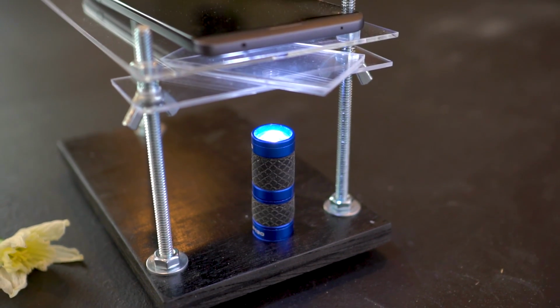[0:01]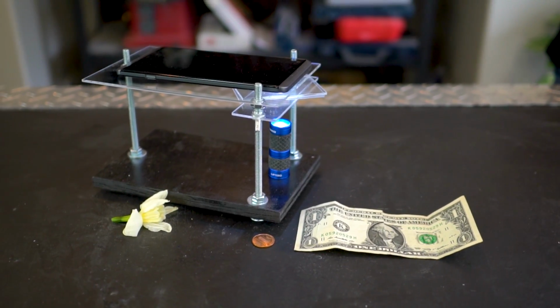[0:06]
In this video, we're going to show you how to take a scrap of wood, a sheet of plastic, and a little bit of hardware to make a microscope that works with your cell phone.
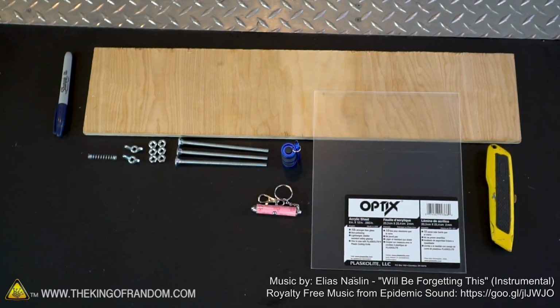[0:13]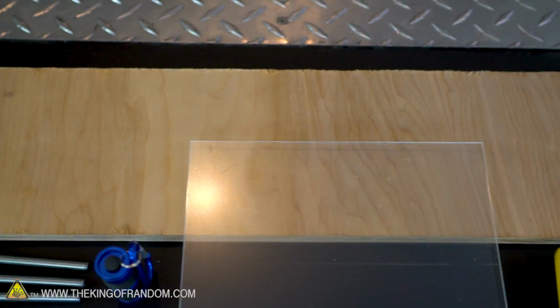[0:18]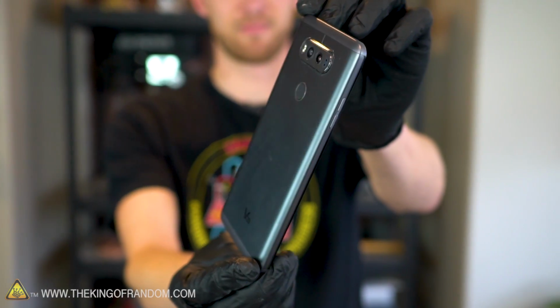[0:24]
The supplies for this project are simple and easy. We have a sheet of clear plastic, a scrap of wood board, a little bit of hardware, and a laser pointer and a flashlight. And of course, since that's how this microscope works, we're also going to need a cell phone with a camera.
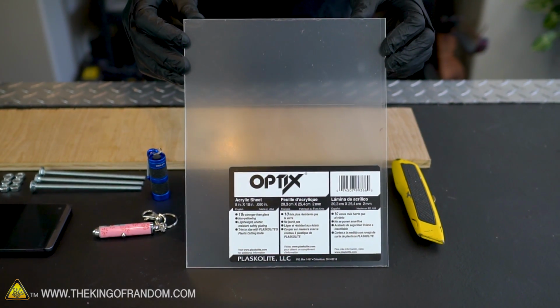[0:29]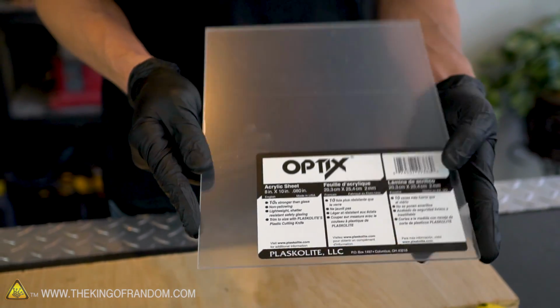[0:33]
First, grab your sheet of plastic. This one is an 8x10 sheet of acrylic from Lowe's that only cost a few bucks. These sheets of plastic usually come with protective layers on both sides. It's time to peel those off.
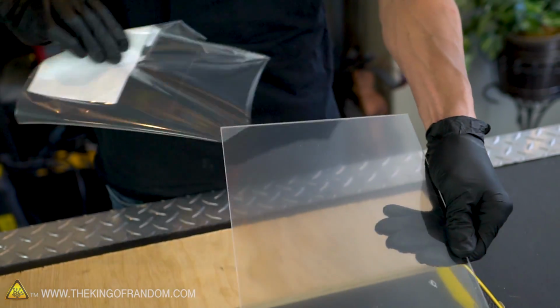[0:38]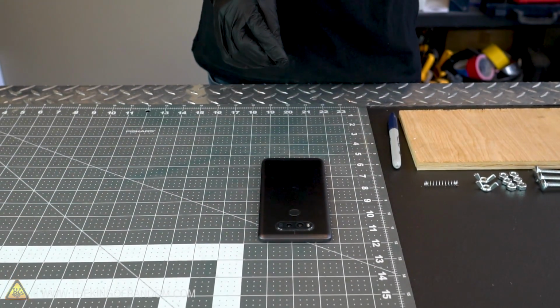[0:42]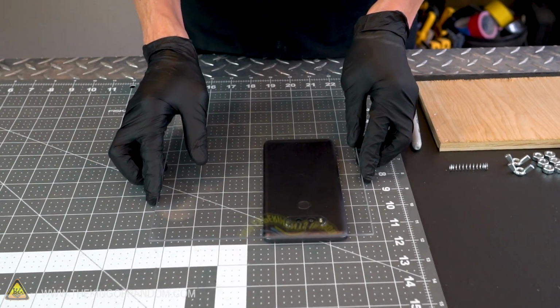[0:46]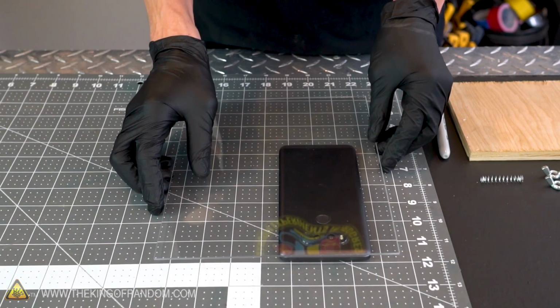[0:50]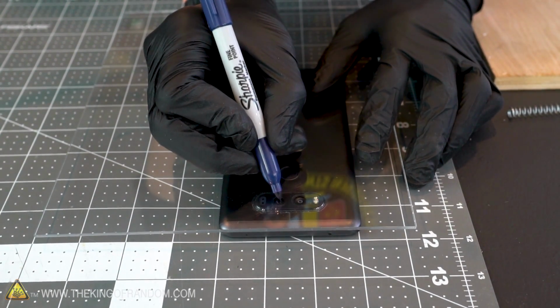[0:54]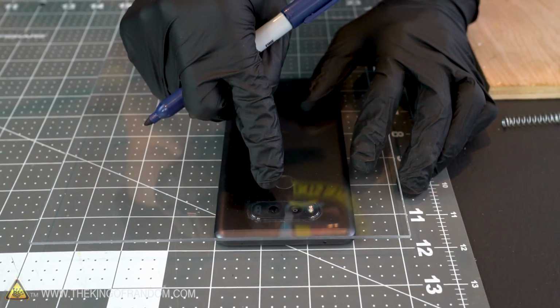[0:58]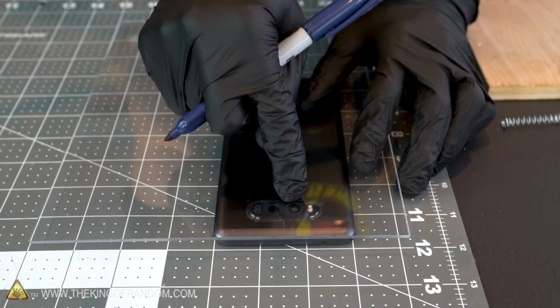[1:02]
Place your cell phone face down on a surface that won't scratch the screen. Then take your plastic sheet and line it up on top of the phone, leaving enough space on both sides so you'll be able to add support points. Using a marker that will draw on the plastic, mark a spot where your phone's camera is. This model of phone has two cameras on the back, so I'm making sure to mark the one that's used for narrower shots, not the wide-angle lens.
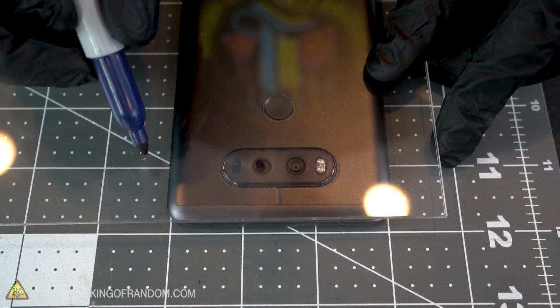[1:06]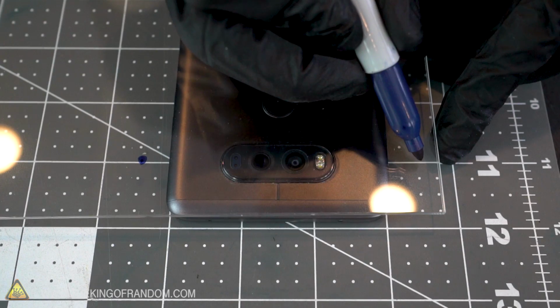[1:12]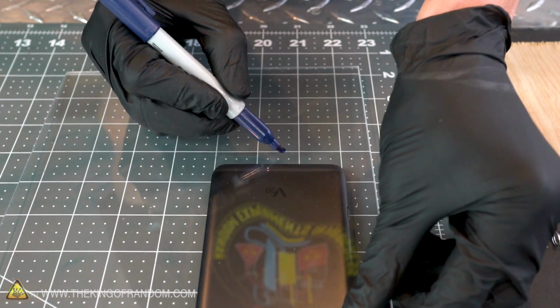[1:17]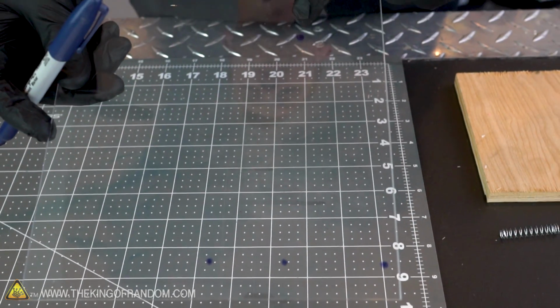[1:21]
In a line with where you've marked your camera, mark two spots on the sides where you can add your supports. You'll be drilling holes into the plastic about one quarter of an inch wide, so make sure you leave enough space. Add one more support point down near the bottom of the phone as well. You should now have four spots marked out in your plastic where you're going to drill holes.
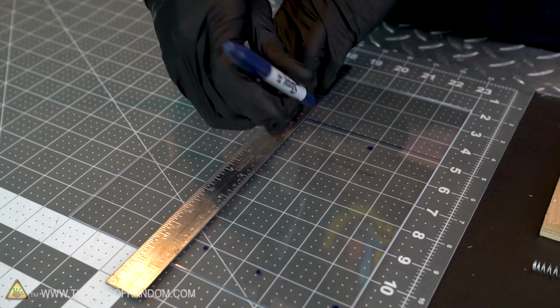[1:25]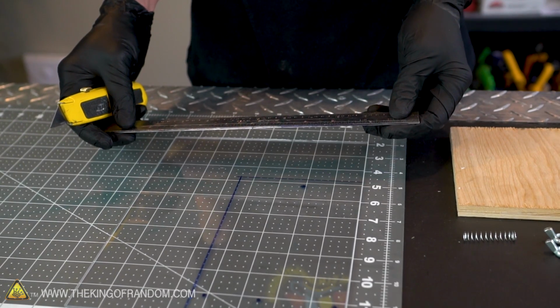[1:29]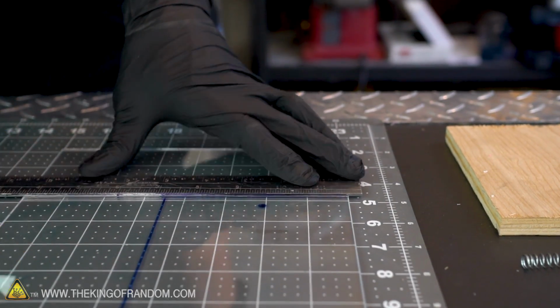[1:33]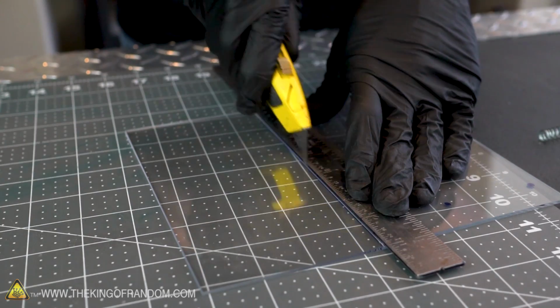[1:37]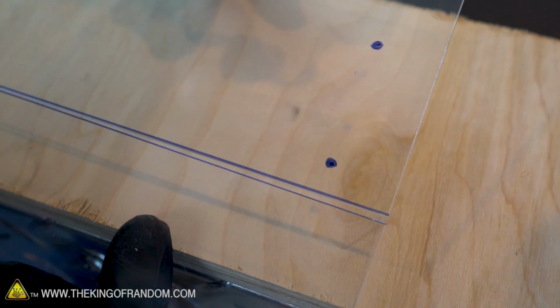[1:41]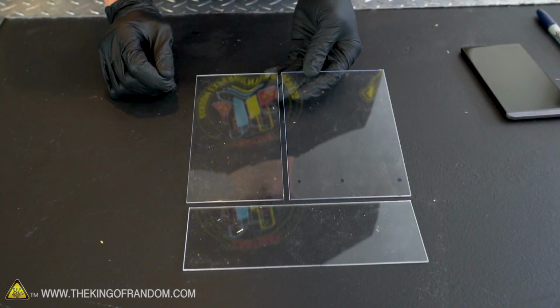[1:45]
But before you do any drilling, you need to cut out a rectangle that completely contains those points. There are several ways to cut acrylic. I find the easiest for a sheet this thickness is to score the plastic with a sharp knife and then bend it over a hard corner. Don't throw away those pieces that you broke off because we are going to use them later.
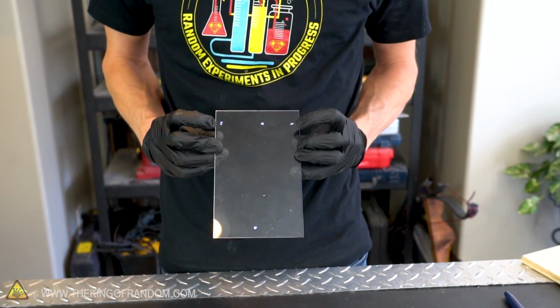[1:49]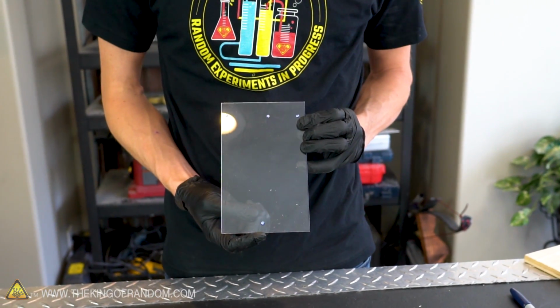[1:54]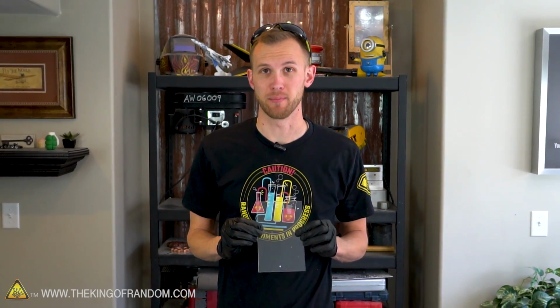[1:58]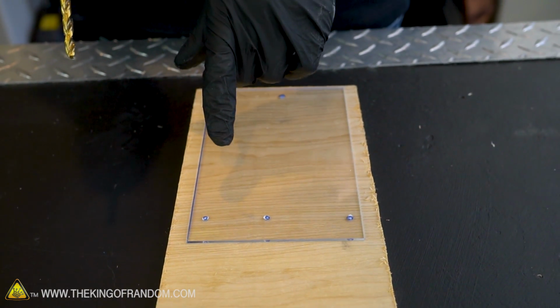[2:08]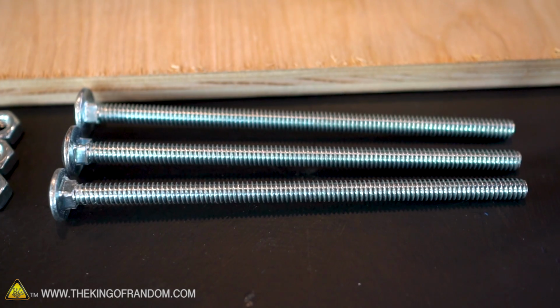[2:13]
The four holes you marked in your plastic will be used for different things. The two on the outside at the top and the one at the bottom will be used for the supports that hold up the entire plastic frame. This one in the middle, however, is going to be used to hold a focusing lens that lets your phone camera see much, much closer than normal. The three support holes need to be the right size to fit your hardware. The ones I'm using are one quarter inch bolts that are five inches long.
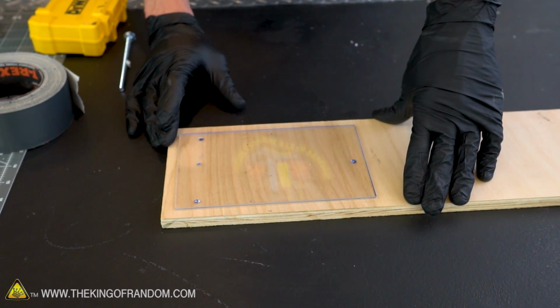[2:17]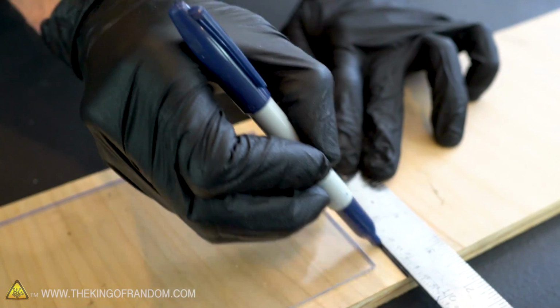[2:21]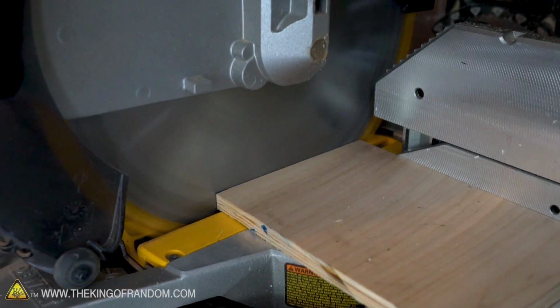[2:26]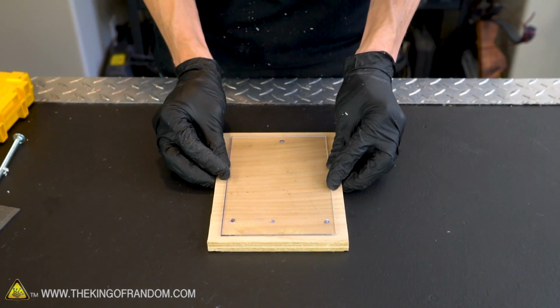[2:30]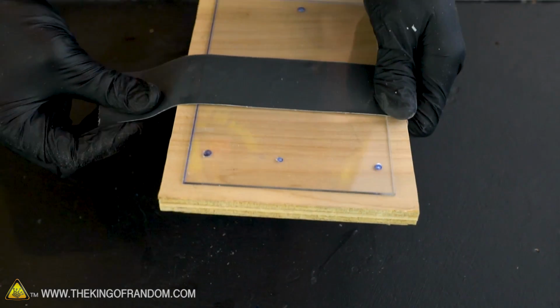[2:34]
With your acrylic sheet cut, you now want to cut your board to be just a little bit larger. Mark where you need to cut it so that there's plenty of space, but it's not too cumbersome. You'll want the holes in your plastic and the holes in the wood board to line up perfectly. So take some strong tape and attach the acrylic sheet to the board temporarily.
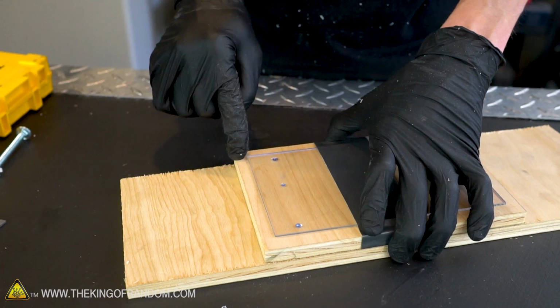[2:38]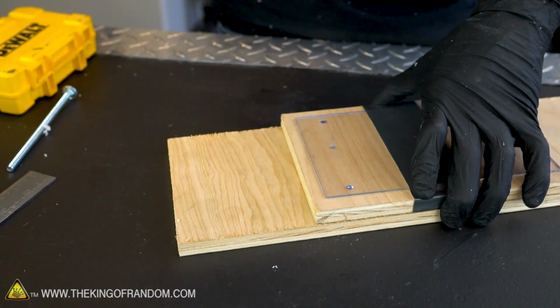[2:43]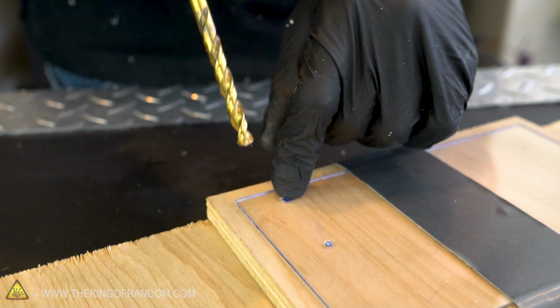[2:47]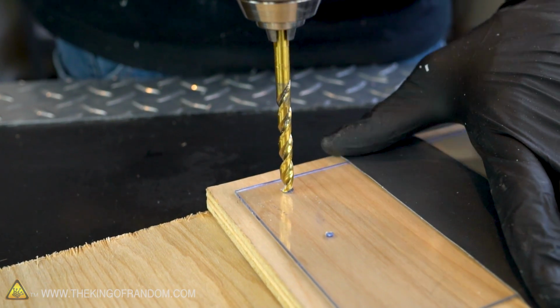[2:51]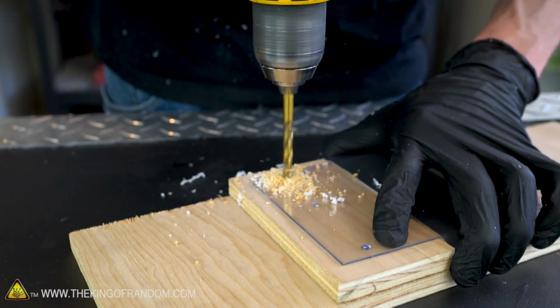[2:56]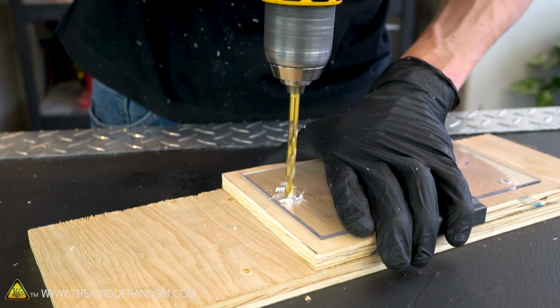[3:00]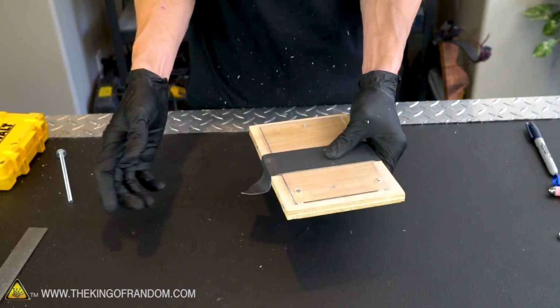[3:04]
We now want to drill through our acrylic sheet and our first board with a scrap piece of wood behind it to make sure we don't drill into the workbench. Drilling through acrylic can be tricky because it does have a tendency to crack if you try and drill too quickly. So use a sharp drill bit and go slow. With those three holes drilled you can remove your tape and separate your plastic from the wood.
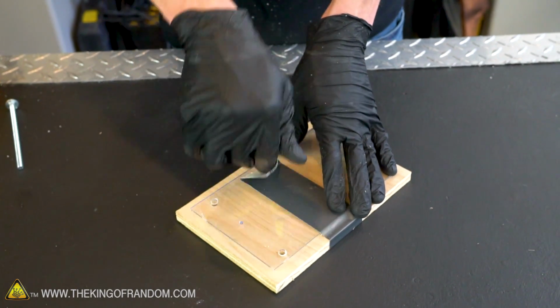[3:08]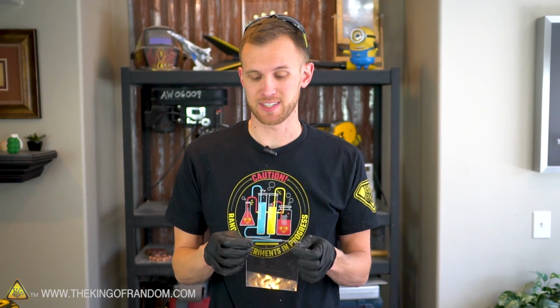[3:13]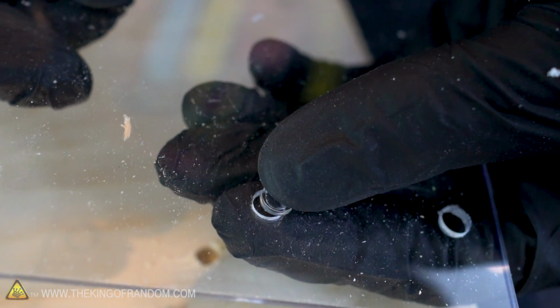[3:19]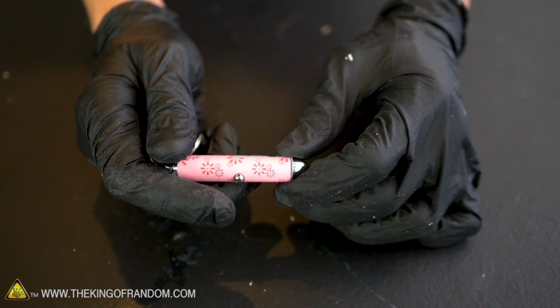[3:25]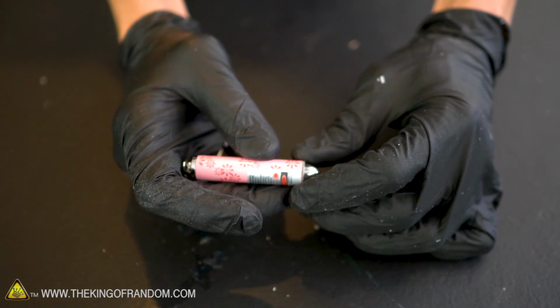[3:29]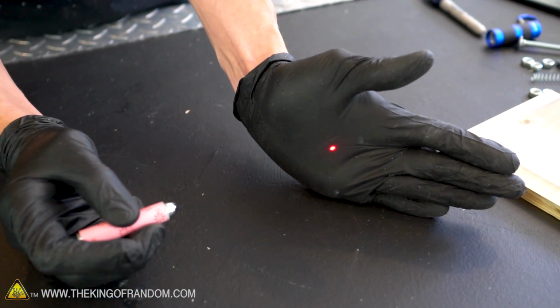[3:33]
The last hole that needs to be drilled into the acrylic doesn't necessarily need to be the same size as the three support posts. What it needs to be is the same size as the lens that we're going to fit into the plastic. To measure that we first need to remove it from where it's hiding. These little keychain laser pointers have been around for quite a while and while they may have been expensive in the past, now you can get them for pretty cheap. I got this one at a pet store where it's sold as a cat exercising toy.
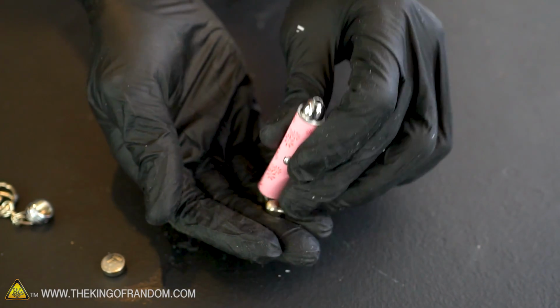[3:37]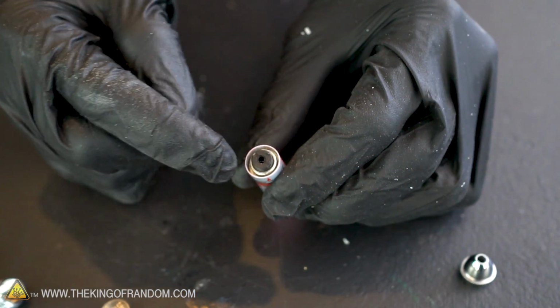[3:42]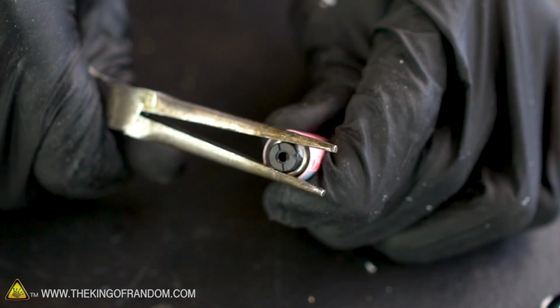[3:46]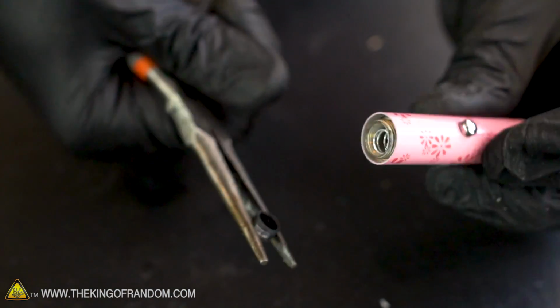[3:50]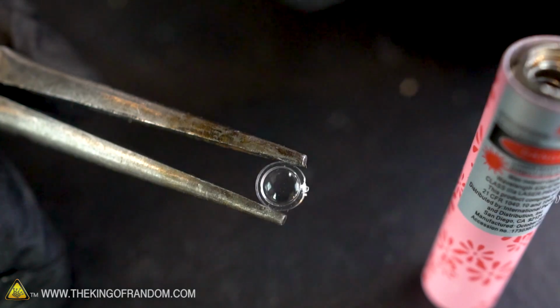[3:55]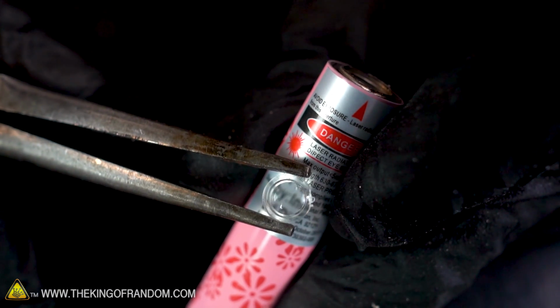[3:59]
As a first step remove the batteries to eliminate any risk of shock. After removing the front tip you should be able to see a black housing. Our lens is hidden down inside there. With a pair of needle nose pliers let's just grip and twist and our lens just popped right out, literally popped right out. Here is the little lens that we're going after. In the laser it's used to focus the beam into a tight point.
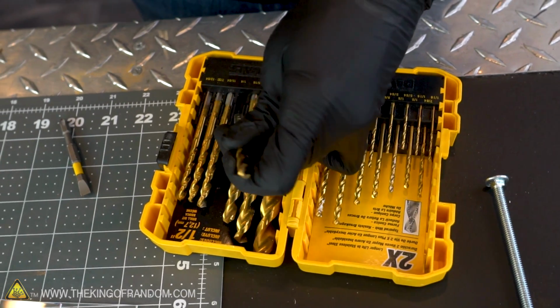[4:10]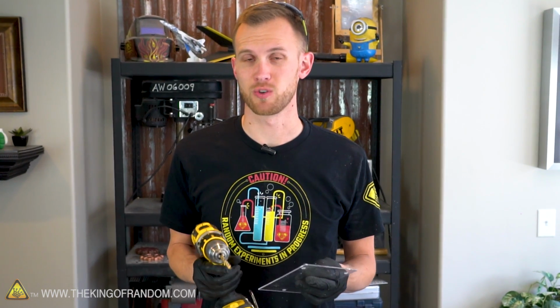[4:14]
You now want to drill a small hole where you marked your camera's position on your cell phone, the exact diameter of this lens that was removed from the laser pointer. On this setup the quarter inch drill bit has made a hole that is almost the perfect size for our lens. So we're going to drill another hole that same size and then try just rotating the drill bit a little bit to widen the hole enough that our lens can fit in.
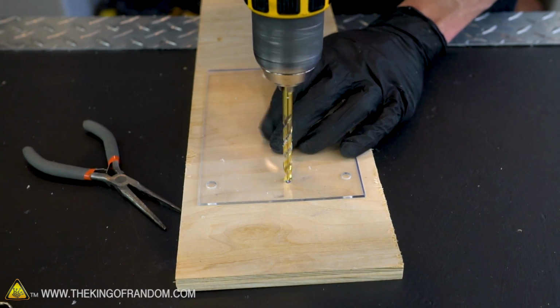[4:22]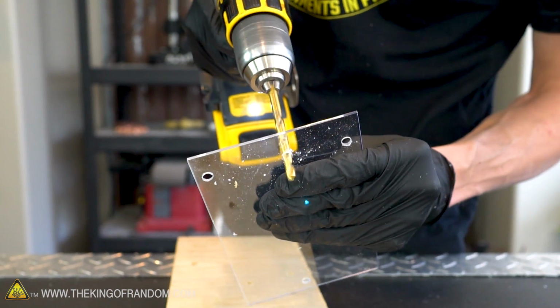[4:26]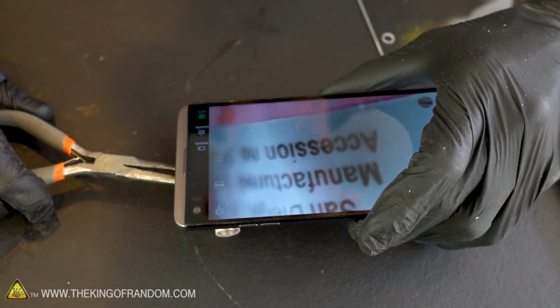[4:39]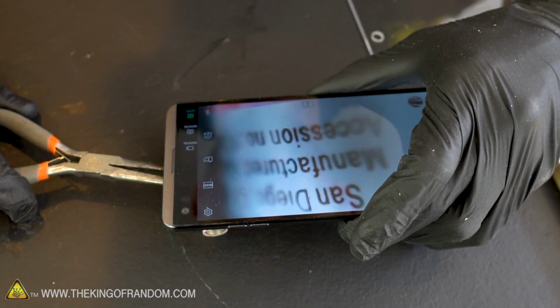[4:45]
You should now have a hole that your lens can fit into, but before you attach it permanently you need to verify that you're going to have it facing the correct direction. Both directions will give you some magnification, but if you have your camera pointed in the wrong side you'll have a very narrow area that's in focus. More of the screen should be in focus if the camera is looking in the correct direction.
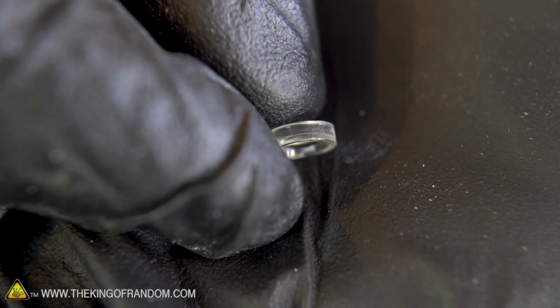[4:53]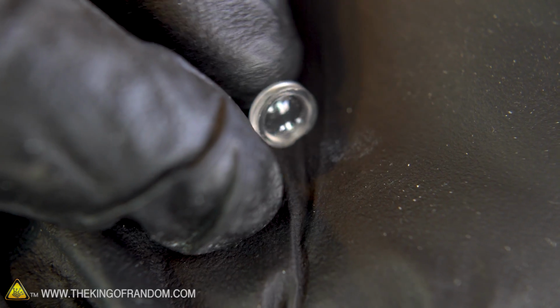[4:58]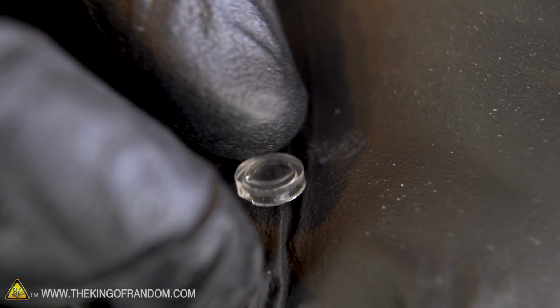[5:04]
These lenses have two sides to them: one side is completely flat and the other has a small ring going around a domed surface. You'll want your camera to be looking through the back of the flat side so that the curved side is facing whatever you're trying to look at.
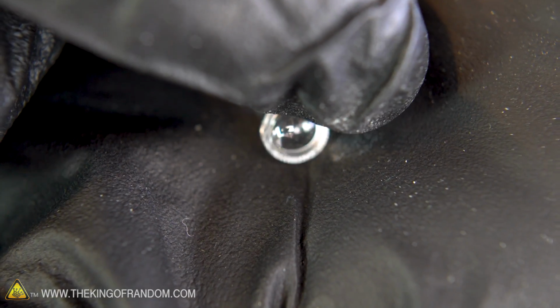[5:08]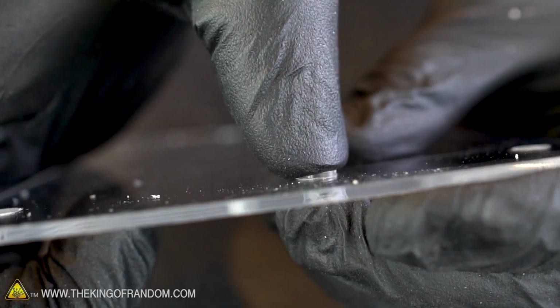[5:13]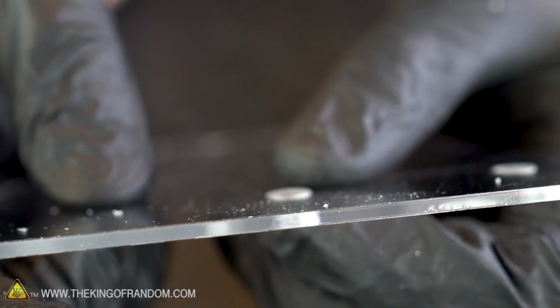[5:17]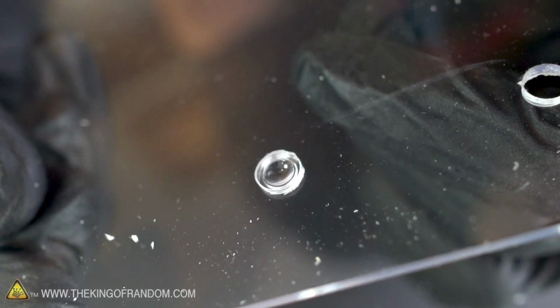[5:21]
With the orientation of your tiny lens identified, you now want to press it into the drilled hole in the acrylic so that the domed side is facing what you're looking at and the flat side is facing your phone's camera. If you've drilled your hole out to the correct size, the lens should pop in and hold itself in place easily.
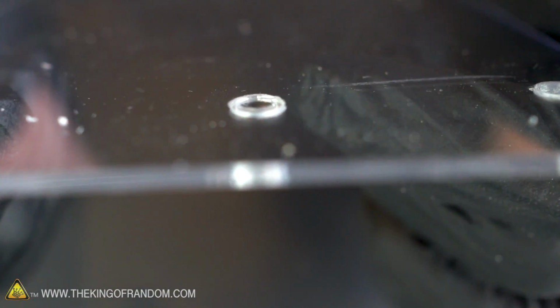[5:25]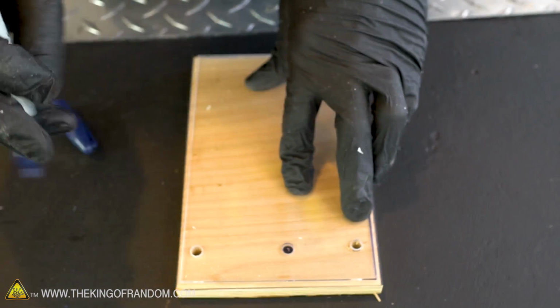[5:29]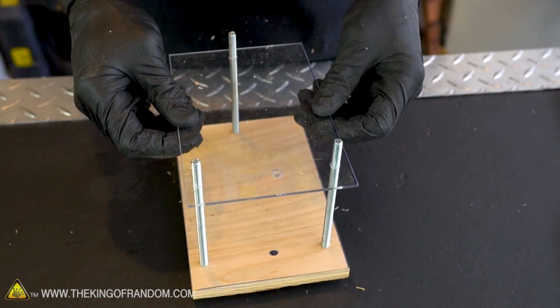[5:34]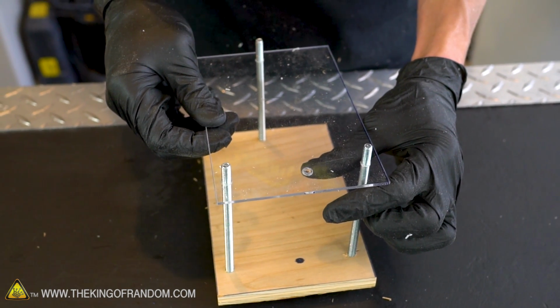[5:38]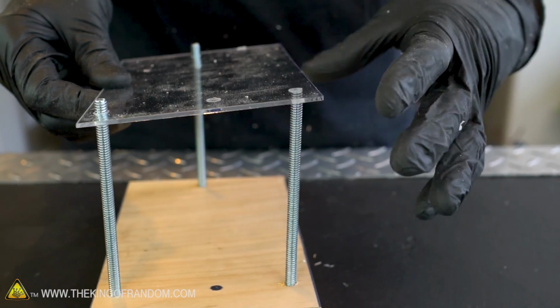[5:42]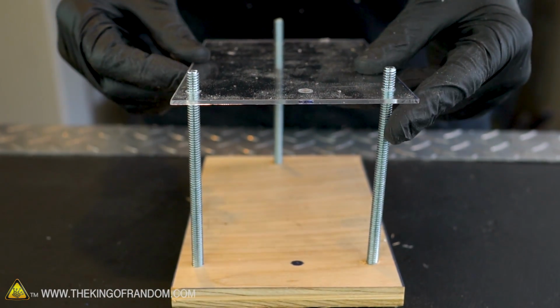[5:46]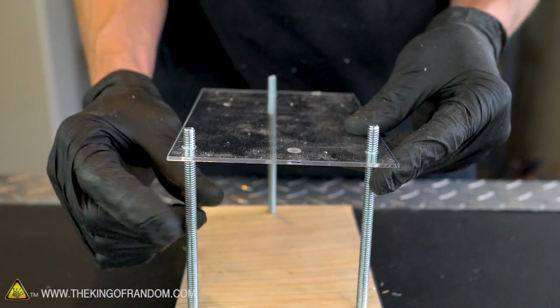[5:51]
With the hole for your lens drilled in your plastic, mark that circle on your board. The three five inch bolts will work as support posts that hold your entire acrylic sheet up, but you'll want a way to look at slides and other things that you're seeing through your microscope. So now it's time to cut and add another piece of your acrylic sheet that will rest below the large one. This one won't have to reach all three posts but will work just fine if it's only attached to the two in front.
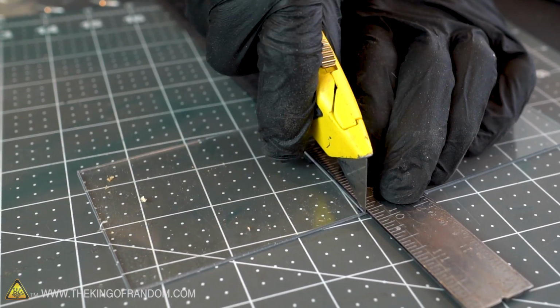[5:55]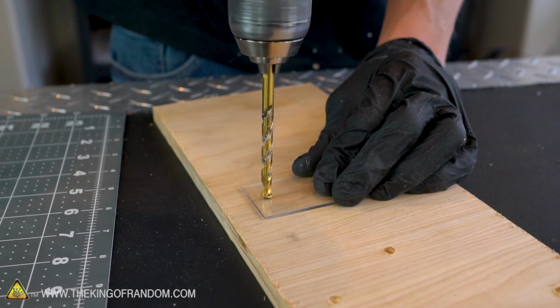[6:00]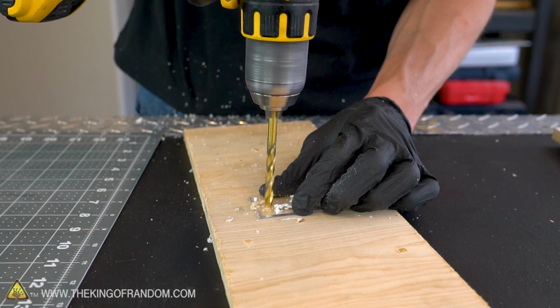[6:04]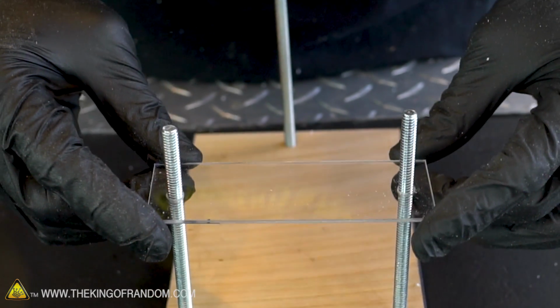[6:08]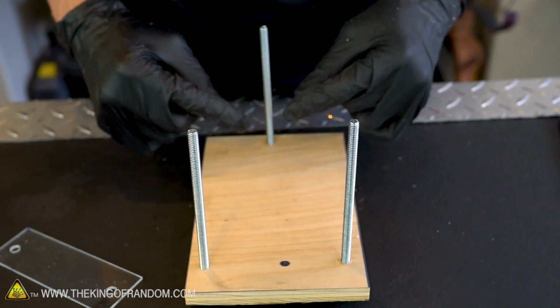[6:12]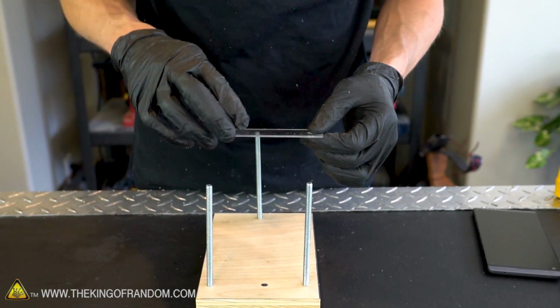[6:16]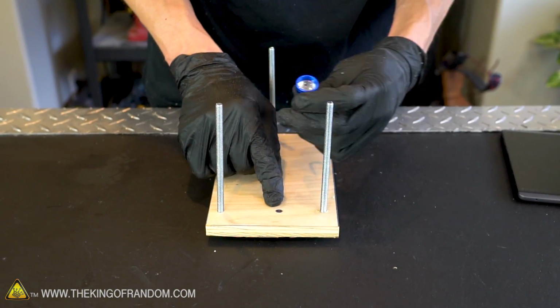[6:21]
This piece will function as a shelf that we can put things on as we observe them through the microscope. Before we finish attaching all of the support hardware and the pieces that will hold our slide and main sheet of acrylic on top, we need to add a hole that will let us attach our light.
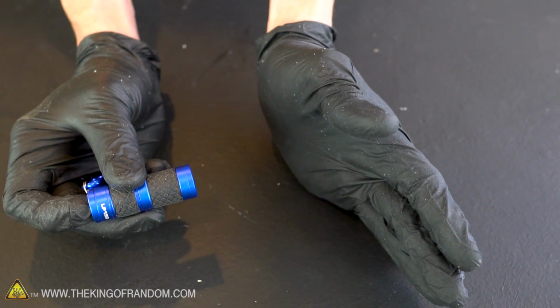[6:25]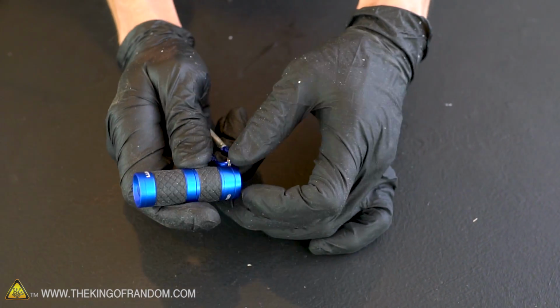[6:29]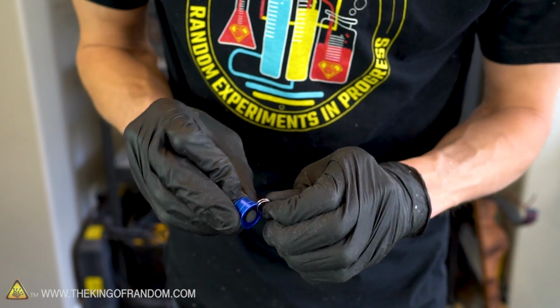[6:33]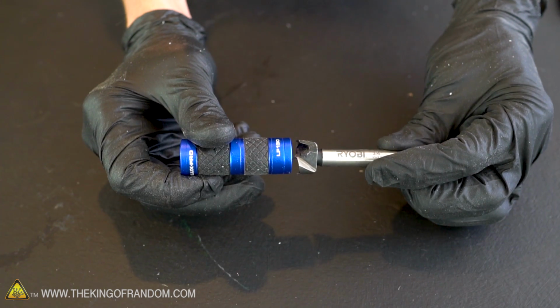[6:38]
This little press button flashlight is from the hardware store and only cost about four bucks. I like the compact design and the fact that the base is almost a perfect cylinder. Let's remove the key ring and then drill a hole into the wood platform that this can fit in. This three quarter inch Forstner bit should be just the right size.
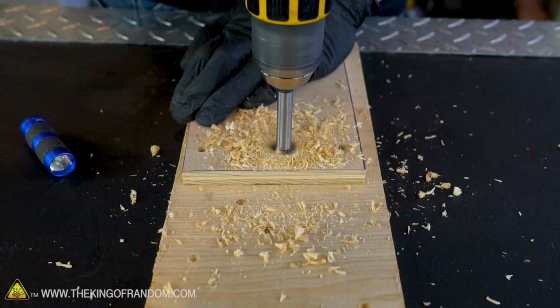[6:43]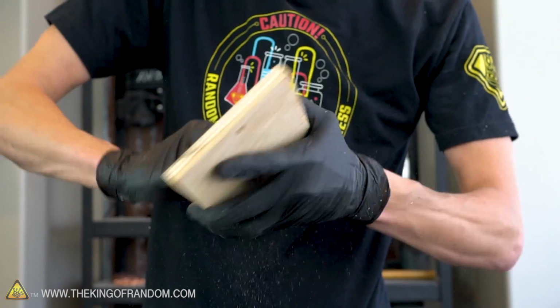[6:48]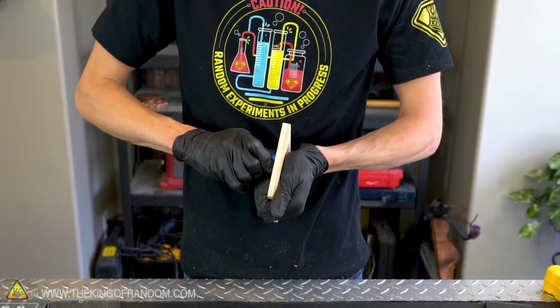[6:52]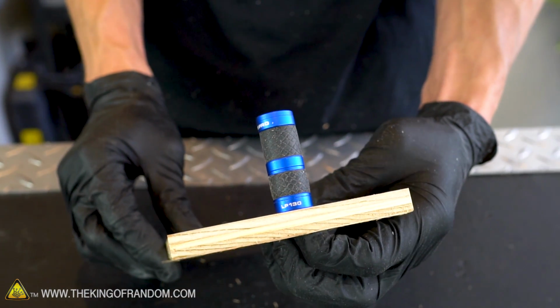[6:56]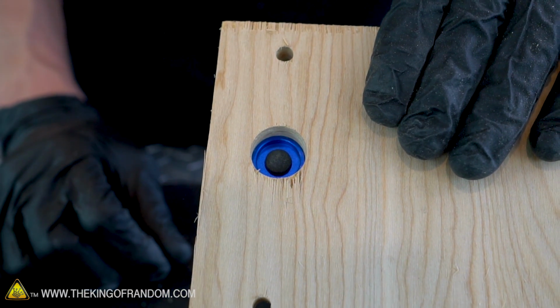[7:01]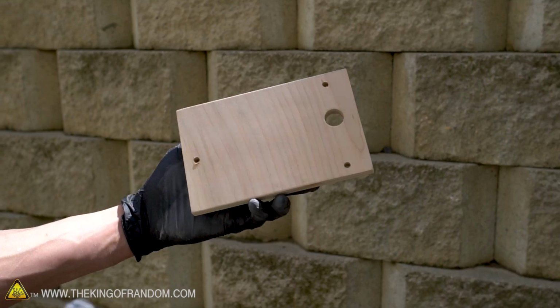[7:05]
The fit seems like it might still be just a little bit snug, so let's try and use some sandpaper to open that up. Our flashlight now fits snugly into the hole we just bored, and we can still access the trigger on the bottom. At this point your board should be ready for assembly, but just to make it look a little bit nicer, let's sand down all of the edges and give it a shot of black paint.
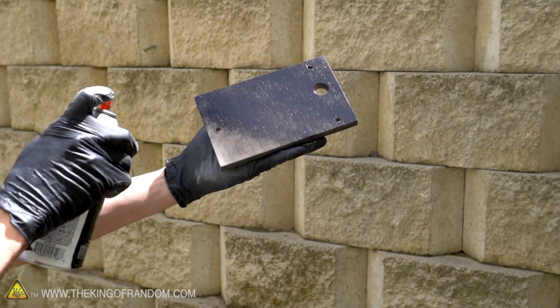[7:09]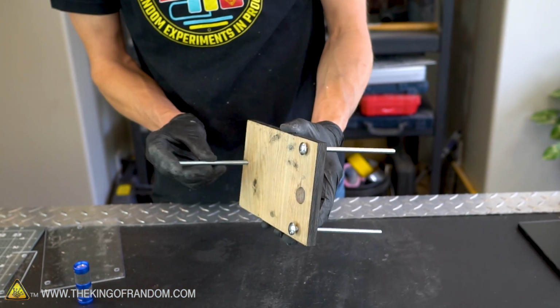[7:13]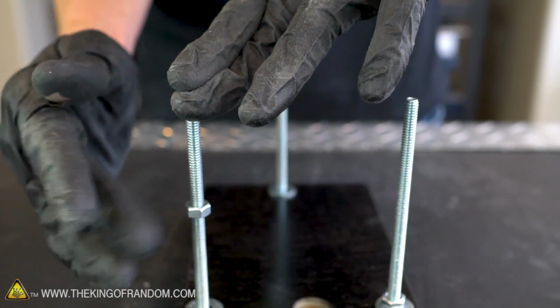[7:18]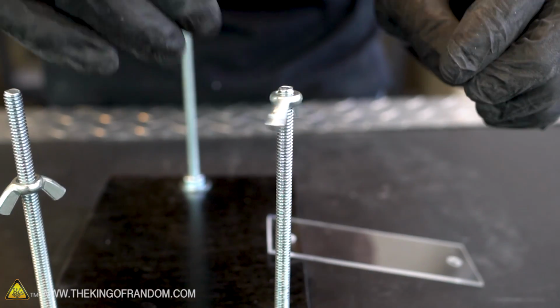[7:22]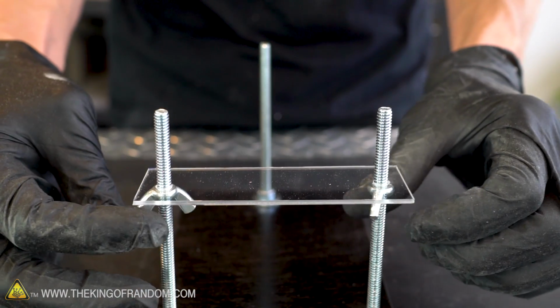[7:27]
Fit the three posts through the holes in the board and then add a washer and a nut to each one. Next, take two wing nuts and attach those upside down onto the front two posts. These two posts will work for both raising and lowering and focusing our slide.
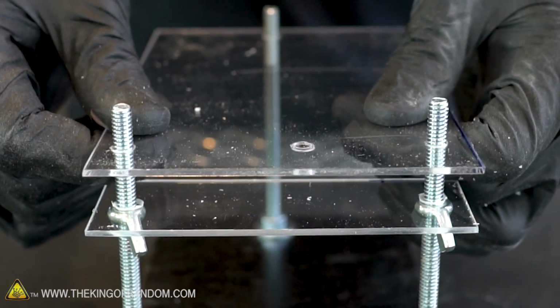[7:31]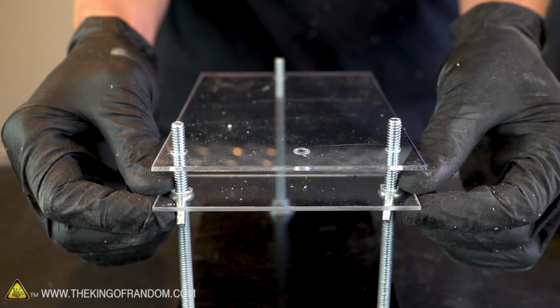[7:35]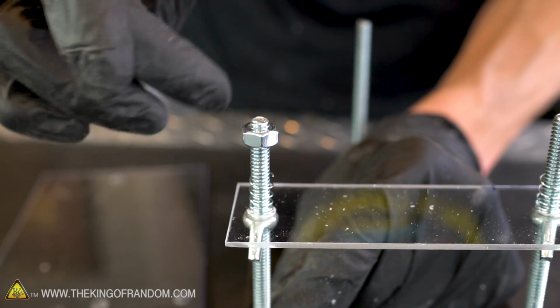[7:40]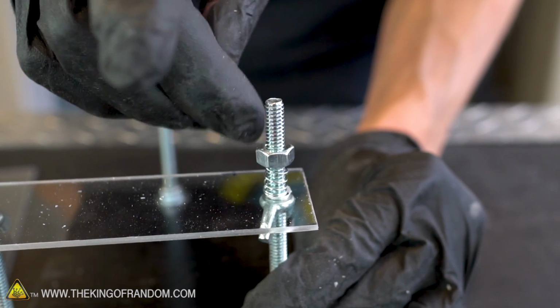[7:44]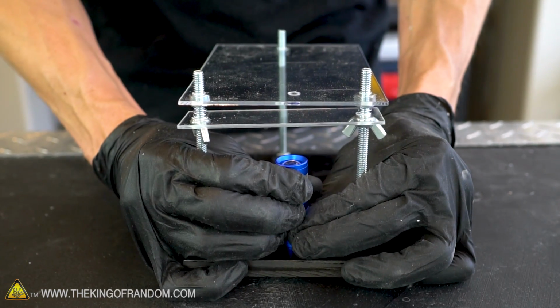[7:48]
Our larger plate will fit over the slide to support the cell phone above it. To make sure our slide moves up and down a little bit more smoothly, let's add some small pieces of a spring in between our slide and the nuts that we'll add to attach our top sheet. Fit your flashlight into place and it should line up just right with your lens.
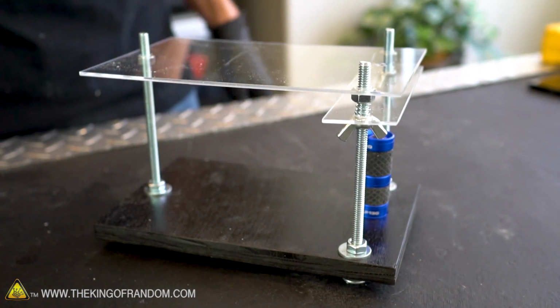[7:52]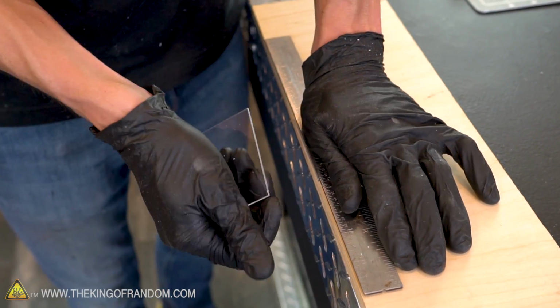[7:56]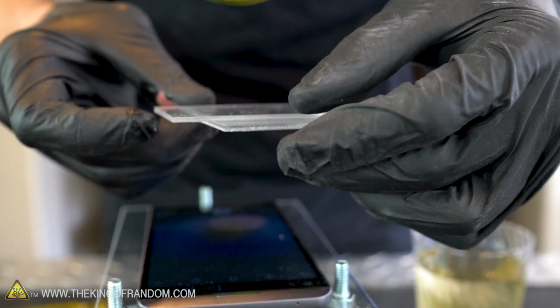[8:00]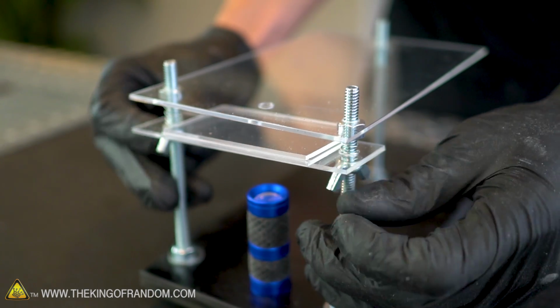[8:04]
As a final accessory, grab one of the remaining pieces of your sheet of acrylic and break it in half to use as two slides to hold things in place under your lens. At this point you should be able to turn on your phone's camera, line it up with the lens, and see a very up close view of what's beneath.
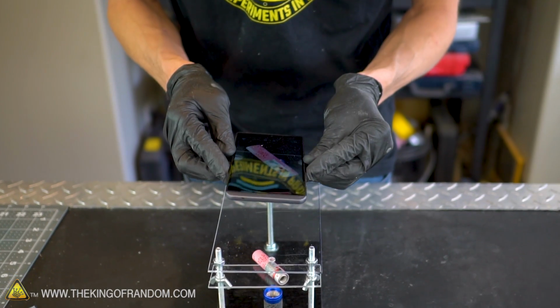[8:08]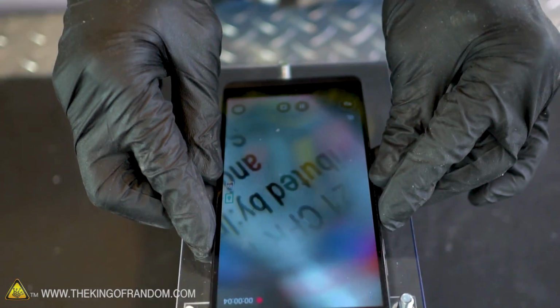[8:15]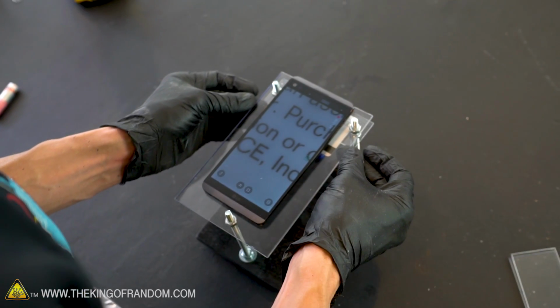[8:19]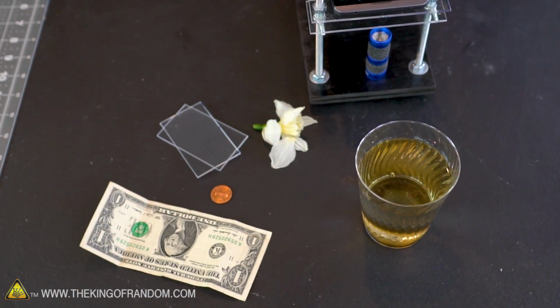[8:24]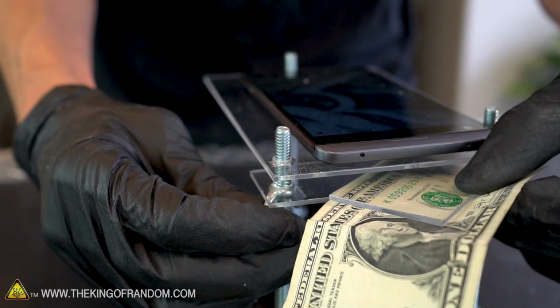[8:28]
We have a few different items that we want to try looking at as up close as possible. Here's an extremely close-up view of part of a dollar bill. Why George, what big eyes you have.
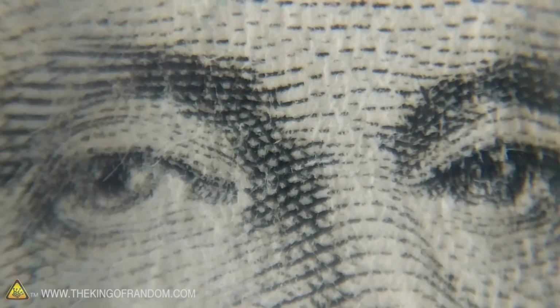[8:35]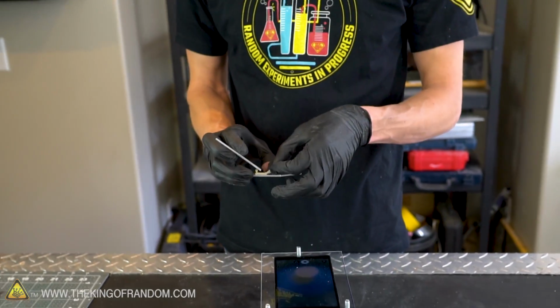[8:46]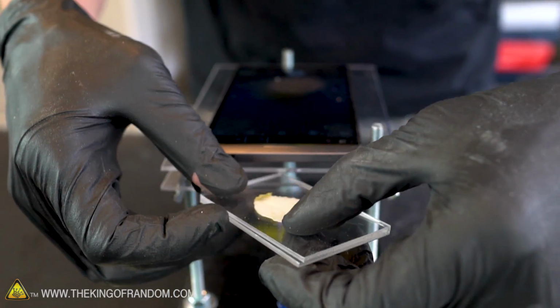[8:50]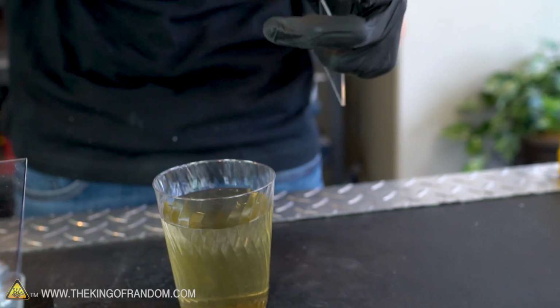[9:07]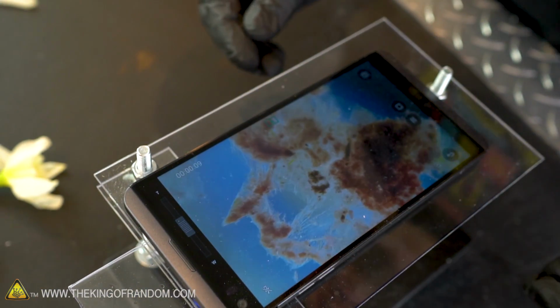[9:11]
Let's see what happens if we sandwich a flower petal in between our two slides and turn on the light behind it. You can actually make out the individual plant cells that the flower petal is made of. You can really see some pretty crazy details when you get this close. Here we've got a little bit of whatever kind of plant is growing in the water feature in the backyard.
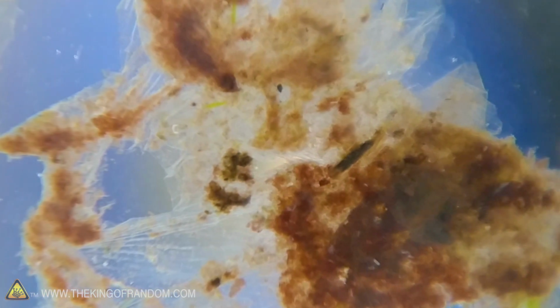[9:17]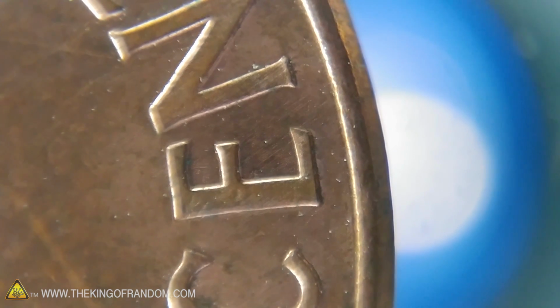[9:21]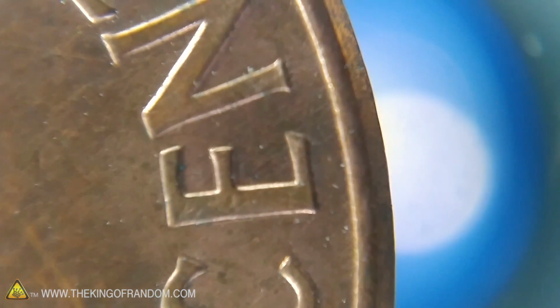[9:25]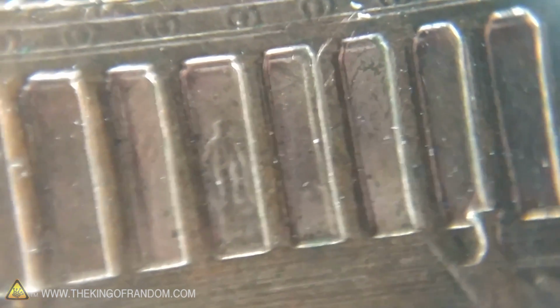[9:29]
With this penny, we can see a lot of details not normally visible to the naked eye. For example, the tiny statue of the Lincoln Monument inside the building pictured on the back of the penny.
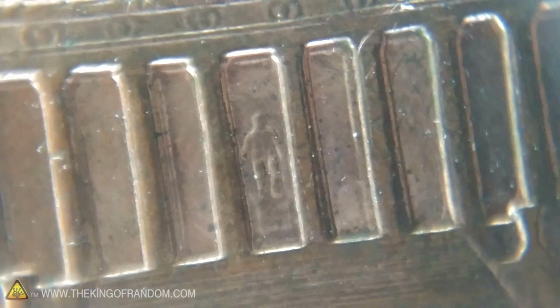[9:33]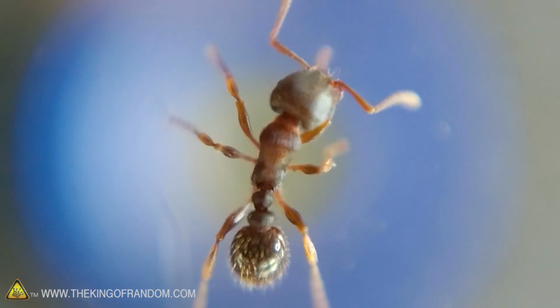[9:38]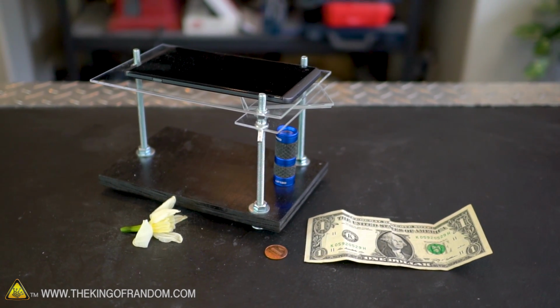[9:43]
This hands-on build is one that I found in an old issue of Make Magazine, and it's really easy to build. Now you can use your cell phone to take extremely close-up pictures and video of things you can't normally even see.